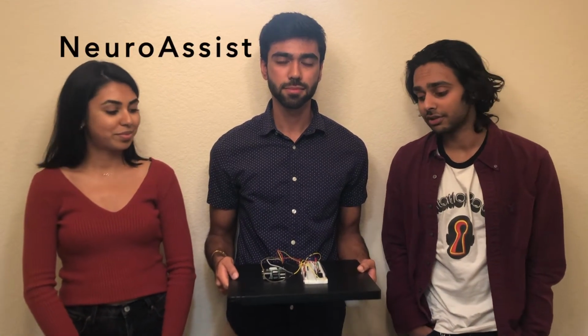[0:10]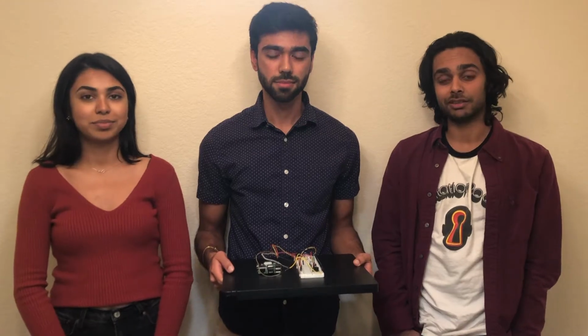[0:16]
My name is Ayush. I'm the other co-head of projects, and we're excited to present NeuroAssist, a brain-computer interface that uses eye movement to facilitate communications for people who are physically immobilized.
We have three main parts to this project: data streaming, signal processing, and hardware interfacing. For the data streaming part of the project, we're using the Muse 2, which has 4 electrodes that can directly stream brainwave data. We're using the raw EEG signals and using a fast Fourier transform to translate this data into brain frequency data so we can use it to create a brain-computer interface.
To do this, we created a supervised machine learning model that's able to take the values and train it real time and send those continuous values over onto a Raspberry Pi. We used socket programming to do this. We have the server side set up on our computer and the client side set up on the Raspberry Pi. Essentially, the server side on the computer averages the values of our decision and sends over continuous values to the Raspberry Pi, which is able to make a decision based on the input and output in either a red light bulb, a green light bulb, or a buzzer.
So this device is primarily designed for those who suffer from paralysis or those who suffer from neurodegenerative diseases that impact speech and mobility functions. With these impediments and these limited mobilities, oftentimes these patients can't express themselves properly or even call for help when they really need to. Our brain-computer interface allows these individuals to respond to simple yes or no questions and also call for help using only eye movements.
So the way this works is just how you shake your head from side to side to say no. Simple lateral movements with your eyes would trigger the red light bulb, which would be interpreted as a no response. And just like how you nod your head up and down to say yes, up and down eye movements would trigger the green light bulb, which would be interpreted as a yes.
To call for assistance, you would simply need to blink rapidly, which would trigger a buzzer and alert anyone who wasn't in the room with you. And our last and final state is the baseline, or rest state, which is basically when your eyes are open with limited stochastic eye movements.
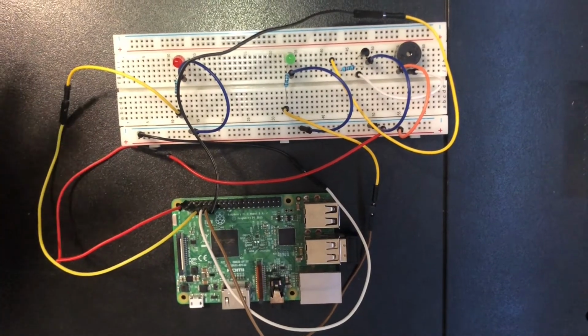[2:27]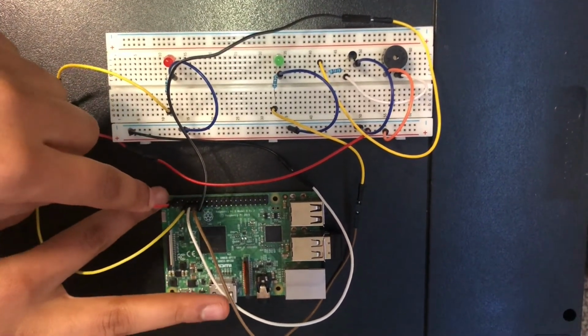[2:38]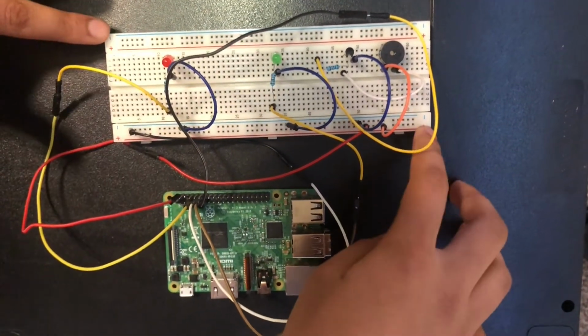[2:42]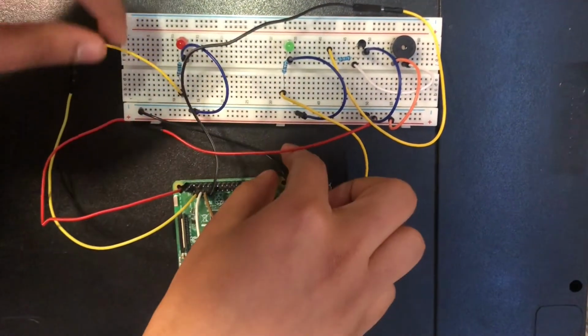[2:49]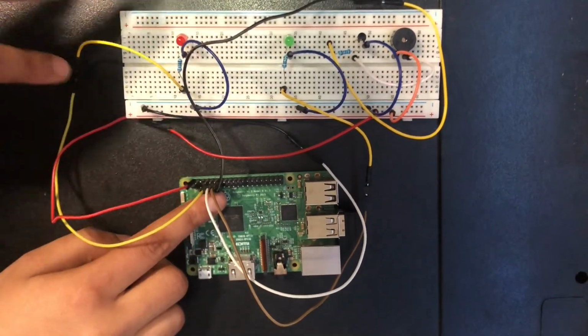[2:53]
So this is our circuit for our project with the red light bulb, the green light bulb, and our buzzer. And so I'm going to go through how this works. This red wire here is connected to the 5-volt GPIO pin, which is always on the Raspberry Pi, and is connected to the positive supply bus on the breadboard. This white wire over here, which connects to this black one over here, is on the ground pin on the GPIO, and it's on the negative supply bus for the breadboard.
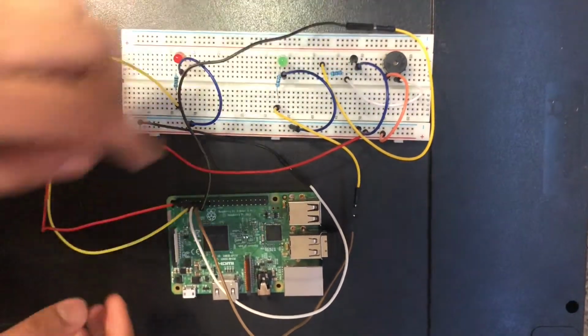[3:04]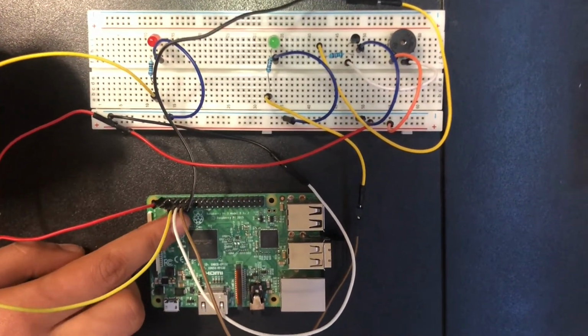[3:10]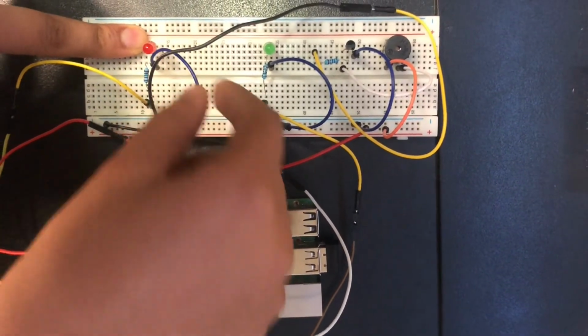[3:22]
The rest of the wirings on the Raspberry Pi are connected to each of these. So the yellow wire here you can see is connected to pin 7 on the GPIO, and it's connected to just on the circuit for the red LED bulb. So this is the positive side. You can see the resistor, the bulb, and this is the negative side of the same red light bulb circuit.
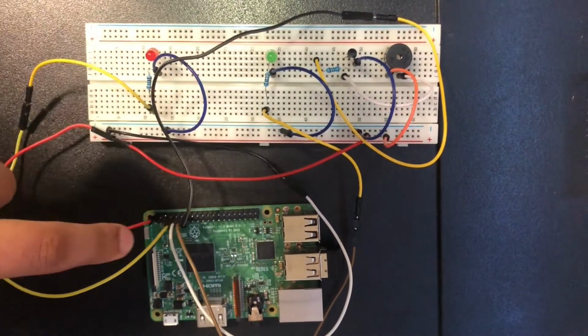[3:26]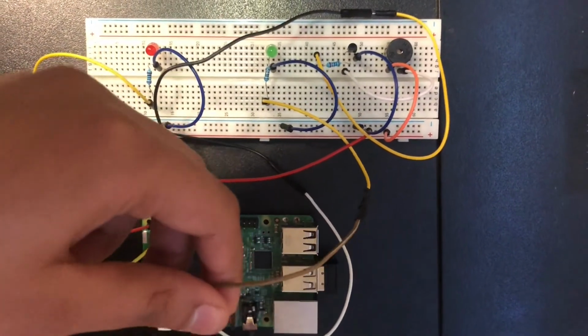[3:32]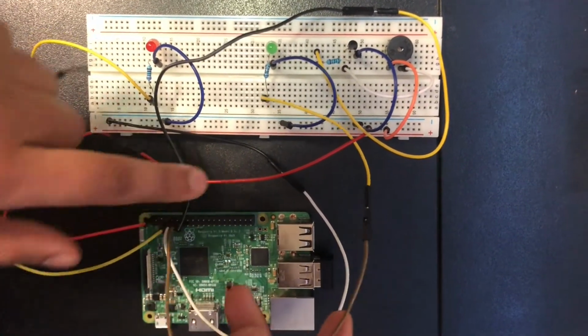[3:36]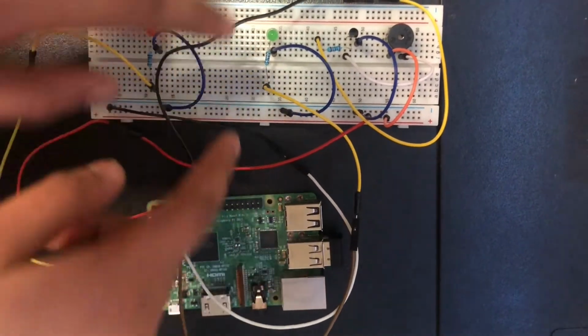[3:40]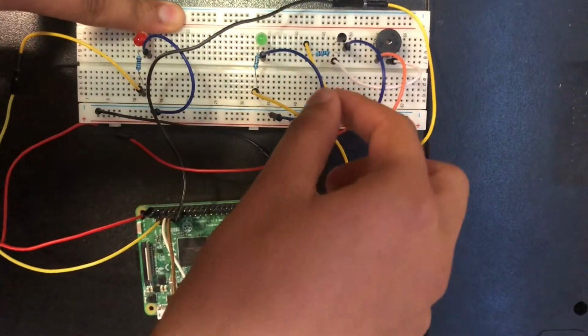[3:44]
Then for the green light bulb here, we have the brown wire connected to become the positive side. So we have it already connected to pin 11 on the Raspberry Pi, and we have it connected to the positive side of the green light bulb. You can see the resistor again, and then the blue wire for the negative side.
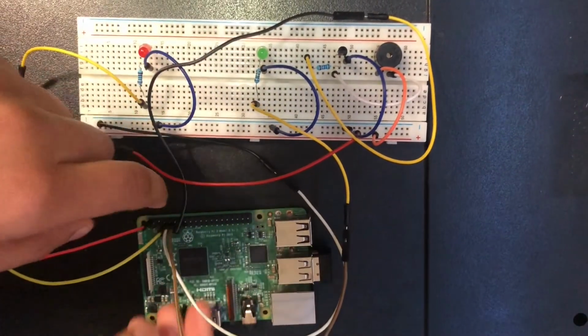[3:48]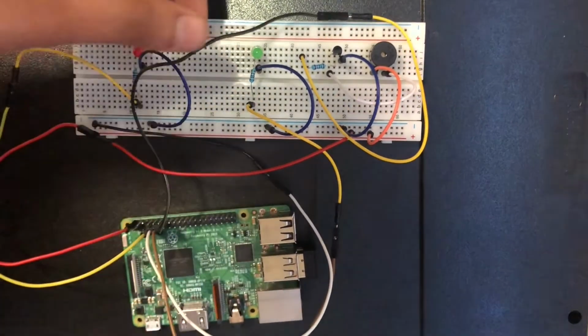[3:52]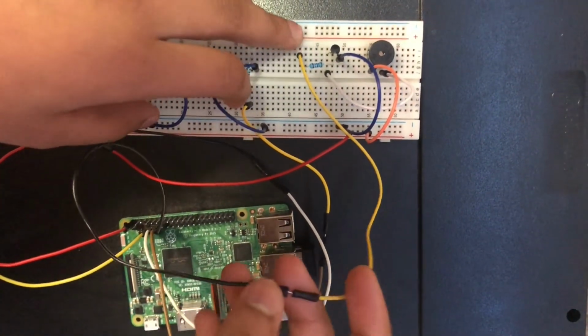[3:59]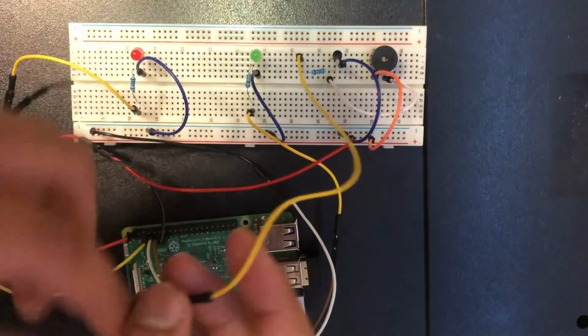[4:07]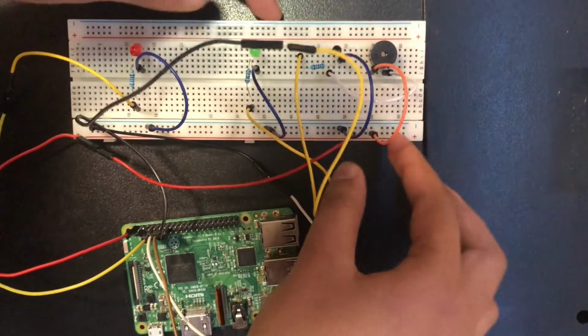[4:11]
Lastly, we have this black wire that connects to the circuitry for the buzzer, and you can see that this side connects again. The circuitry for the buzzer was slightly different than for the ones for the bulbs, but it has a resistor and a transistor involved, and we have this as a negative side, and we have the 3 wires going that complete the circuit for the buzzer.
Here's a live demonstration of how the BCI works. When she moves her eyes from side to side, we see the red light bulb glow. When she moves her eyes from top to bottom, indicating a yes, we see the green light bulb glow. And then when she blinks her eyes rapidly, we hear the buzzer.
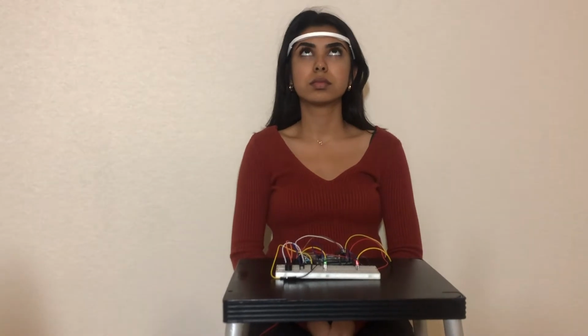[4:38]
Then again, when she moves her eyes up and down, we see the green light bulb glow. And then when she moves her eyes from side to side, we see the red light bulb glow, indicating a no. When she doesn't move her eyes, everything is turned off.
This is an interactive demo with the NeuroAssist. Ayush will be asking Priyanshi questions and she'll be responding using the BCI. Hey Priyanshi, are you hungry?
Red light, I guess that means no. Hey Priyanshi, are you thirsty? Green light, means she is. Here you go. Oh no, she needs help. Here you go.
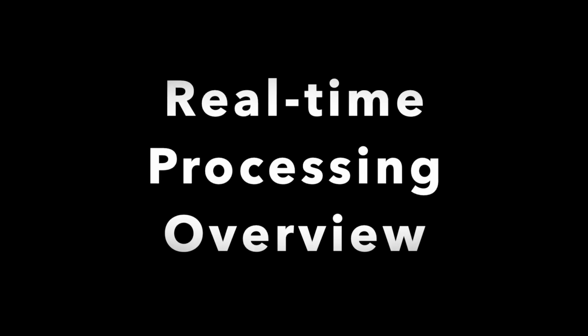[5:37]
We're streaming the data from the Muse to a Mac over Bluetooth. Because the Muse headset uses Bluetooth Low Energy, it is not compatible with the native Bluetooth driver on the Mac. So to establish connectivity, we have to use the BLED112 dongle, which is this little thing that you're seeing here. After you've connected that to your computer and established Bluetooth connectivity, we used the Muse LSL library to initiate a stream, and we used PyLSL to create an inlet and pull that stream from the Muse.
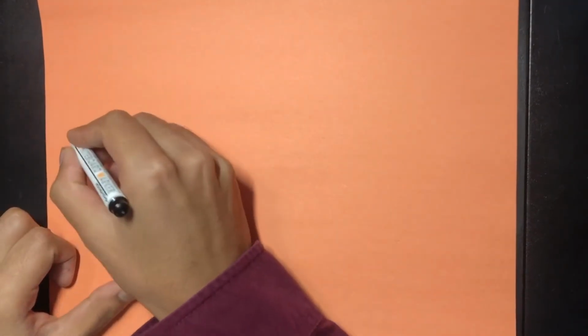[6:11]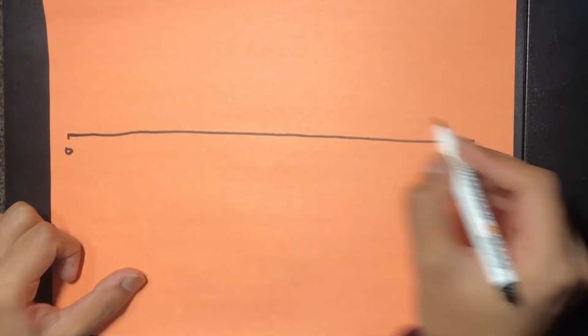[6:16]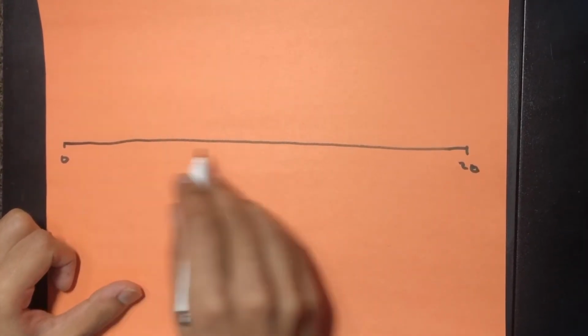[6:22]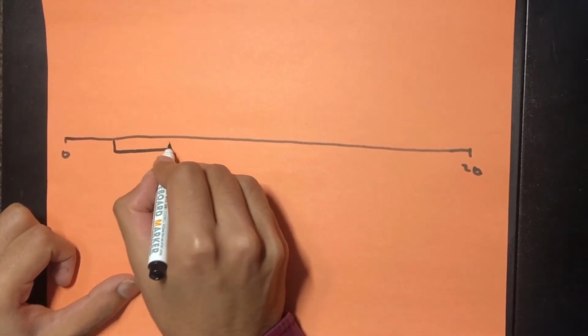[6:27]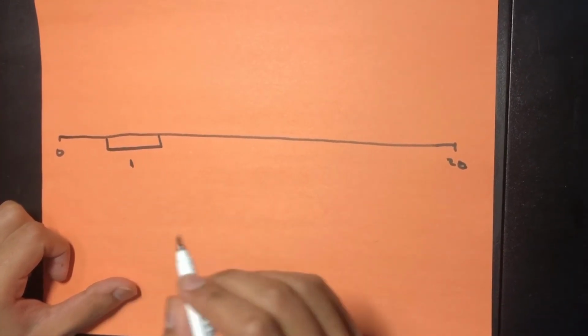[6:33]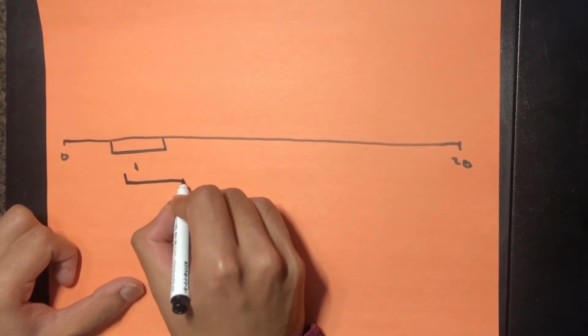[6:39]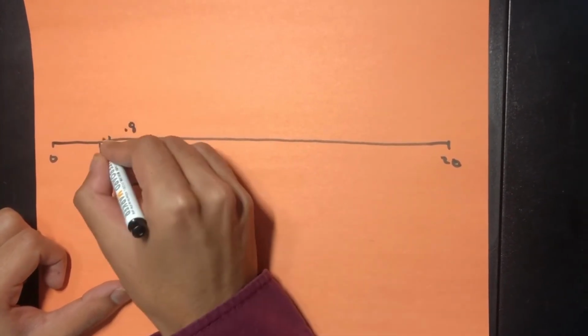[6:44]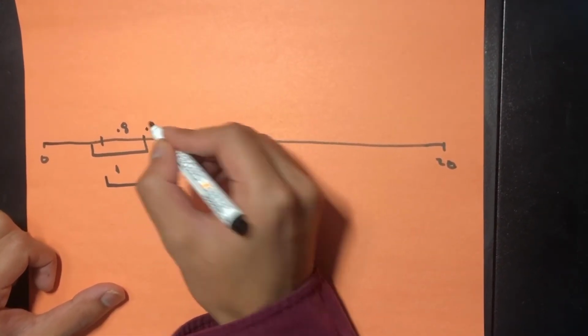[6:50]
To train the classifier, we're recording 20 seconds of data for each feature. Imagine this is the data that we take. Then we divide this data into epochs of 1 second. Let's take an epoch length from here to here. The next epoch we take is going to have 0.8 seconds of overlap with the previous epoch. This distance from here to here will be 0.8, and the new data that we're adding to the epoch every time is 0.2 seconds.
After we divide the data into epochs, we compute the band powers of each epoch of each feature. So in total, we have 4 feature matrices with epochs and corresponding band powers. We then feed those feature matrices into our multi-class machine learning model, which in this case is a random forest classifier. So now that our model is trained and our classifier is ready, it's time to actually start getting the classification outputs that we need.
So we have a buffer where we store 5 seconds of data at any given point in time. The buffer is continuously updated 0.2 seconds of data at a time. We first start off by applying a bandpass filter, more specifically a Butterworth filter, on the entire buffer. From the buffer, we take out epochs, and once the new epochs are created, we compute the feature vectors of each epoch by applying an FFT. After we get our feature vectors, we then pass them into the model that we just trained, and from that we get our classification categories, 0 to 3, for the 4 categories that we have.
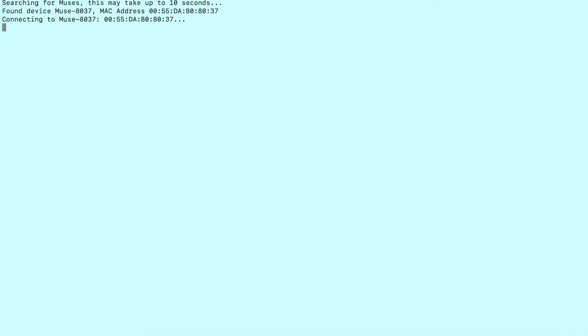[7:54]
In order to get our BCI project to work, first we have to stream data directly from the Muse to our laptop using Bluetooth. So you can see here we did Muse LSL stream, which found a device, connected to it, and shortly it's going to stream data directly from the Muse. Okay, so now you can see that it's streaming the EEG.
Then on 2 separate terminals, we'll have the server and the client program. So the server will be on the purple side. So when we run our script, Python BCI classifier, I set the training length to 5 seconds, so it's not an accurate training, but it'll instruct the user to enact the 4 different features, so keeping their eyes open, moving their eyes side to side, moving their eyes up and down, and then just blinking rapidly.
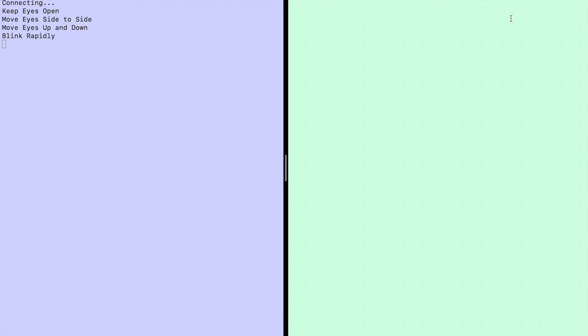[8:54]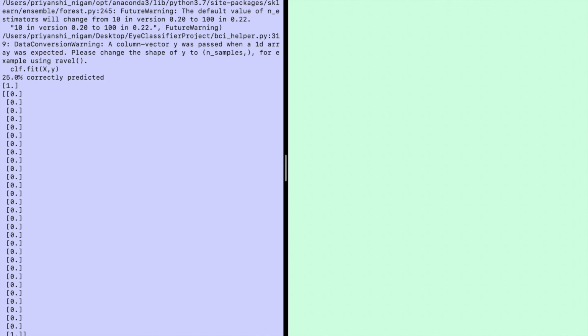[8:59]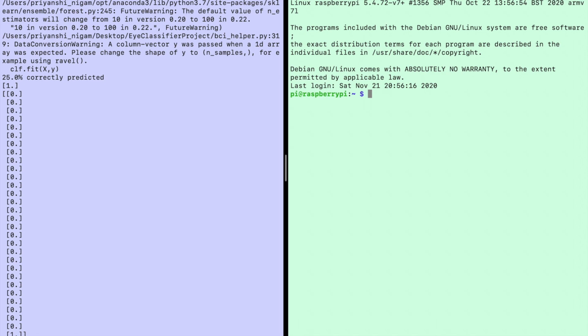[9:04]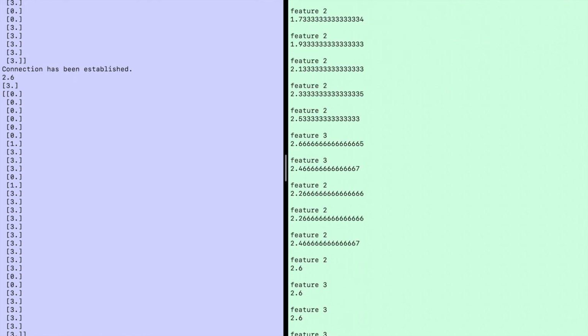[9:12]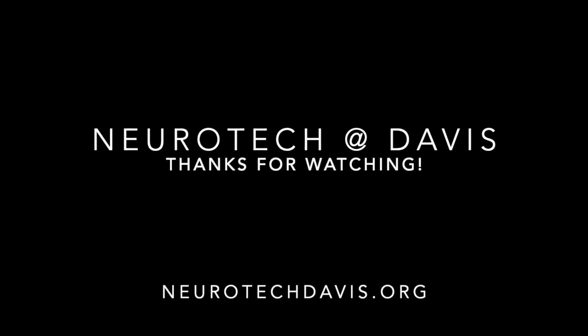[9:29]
And on the client side, we'll first SSH into the Pi, which will ask us for a password. And once we're in the Pi, we can run the circuit program. And now you can see it taking the data from the server side and transporting it to the client side and classifying it into different features, which currently are not accurate, but when we actually train it for 20 seconds, these will be accurate features.